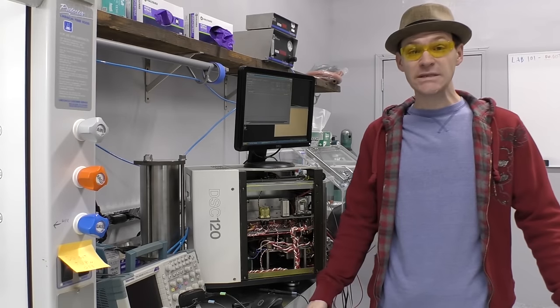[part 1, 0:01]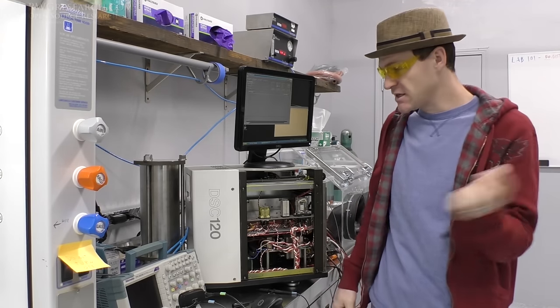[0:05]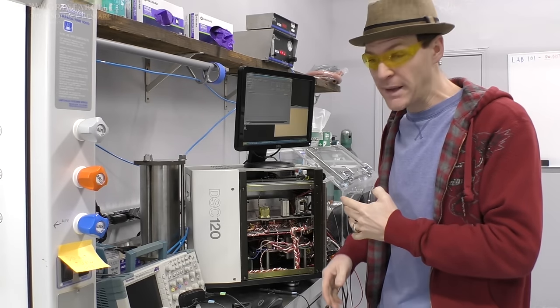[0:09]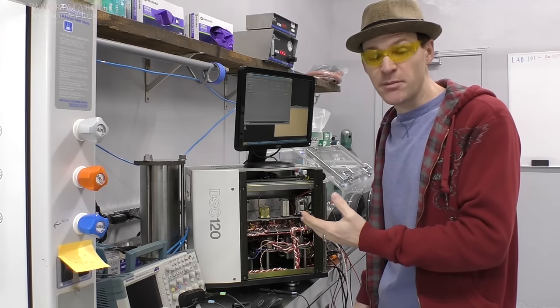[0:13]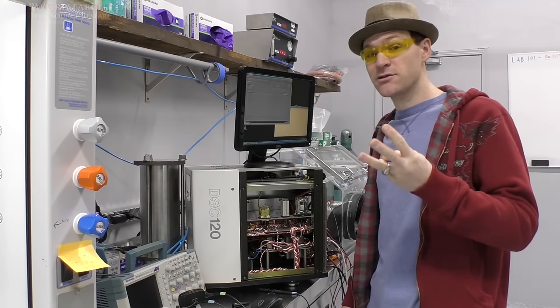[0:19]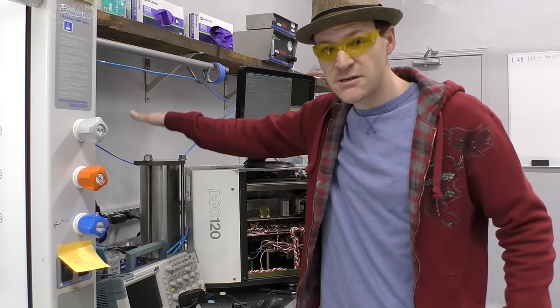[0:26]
So this video is about hacking the DSC, the differential scanning calorimeter. If you remember a little while back, we started working on this, we disassembled it, and I started building a pressure cell. So this video is actually going to be about building this pressure cell. I think there's three of these videos coming up. They're pretty interesting. They're just fun, and me building this pressure cell.
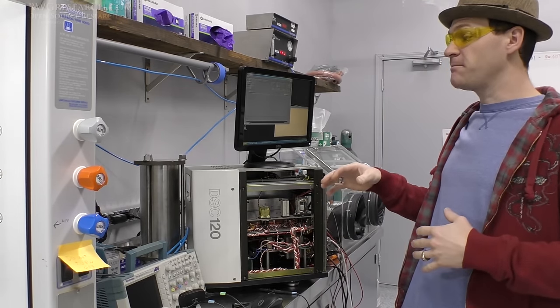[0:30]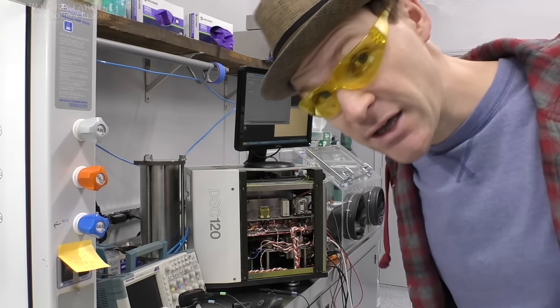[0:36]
Now, when we get to the end of those videos, in several weeks or more, I'm going to be showing you what I'm doing here right now. And so we'll get back to that real soon. Enjoy.
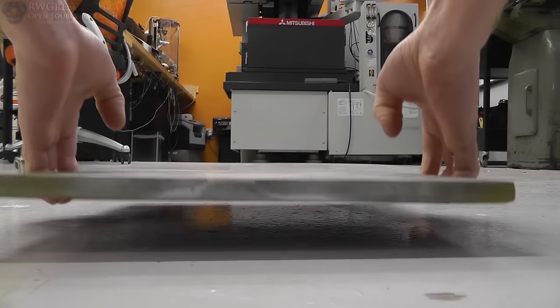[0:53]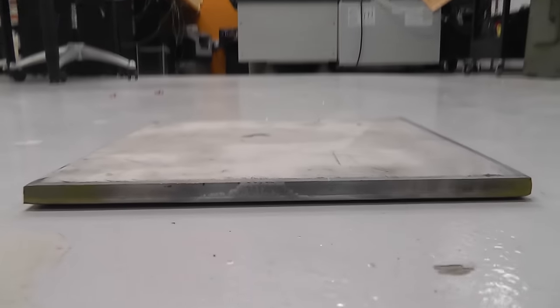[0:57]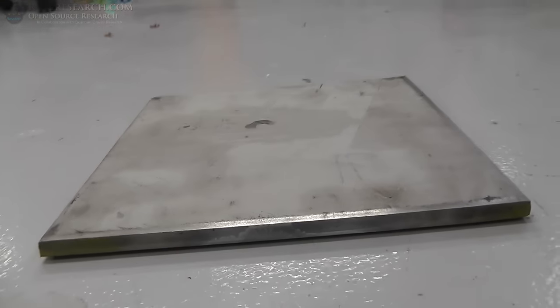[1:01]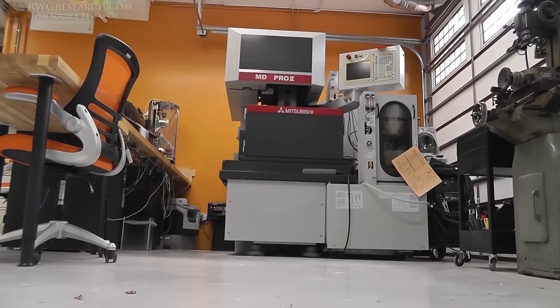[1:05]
So today we are working on the pressure cell for the DSC. And it all starts right here. This, my friends, is a half-inch stainless steel plate. We're gonna cut it, machine it, and do some other stuff, starting with the EDM. So let's get started.
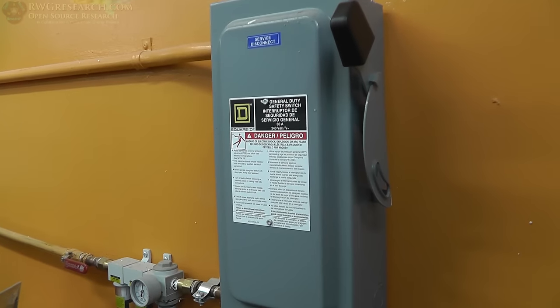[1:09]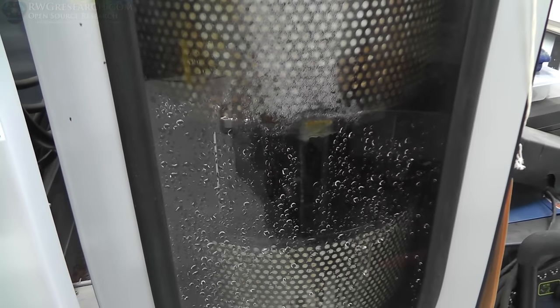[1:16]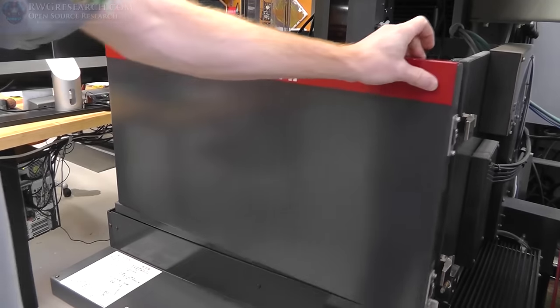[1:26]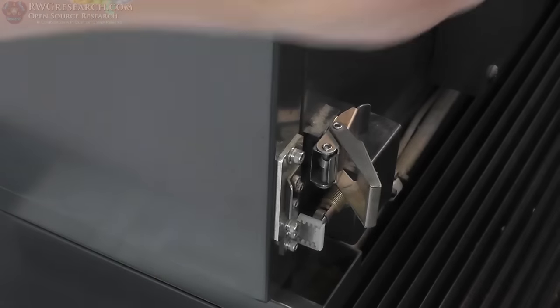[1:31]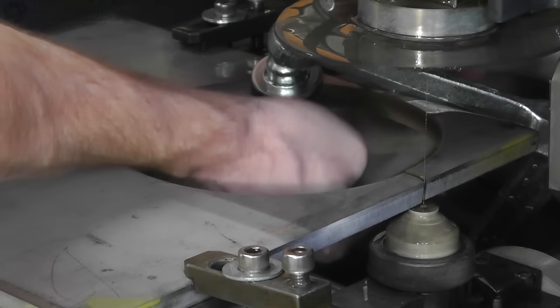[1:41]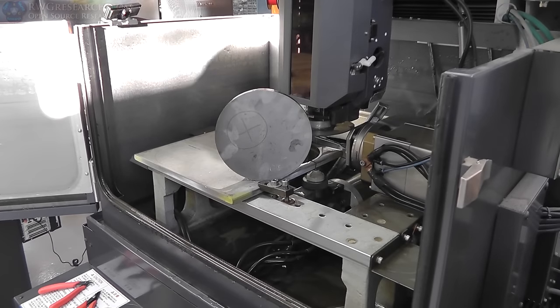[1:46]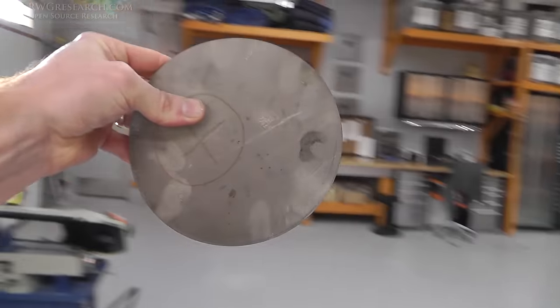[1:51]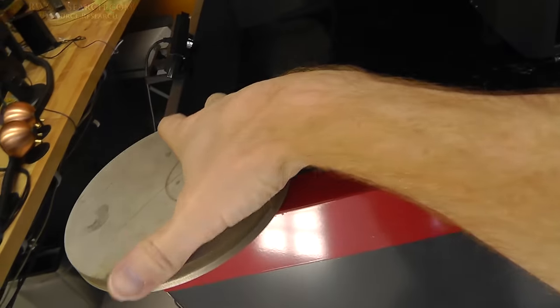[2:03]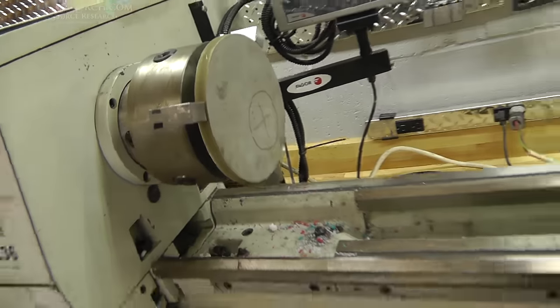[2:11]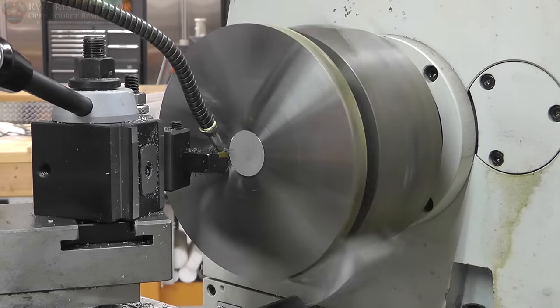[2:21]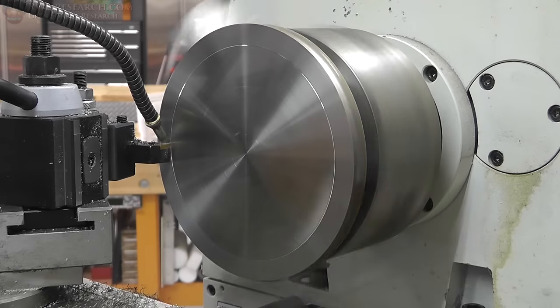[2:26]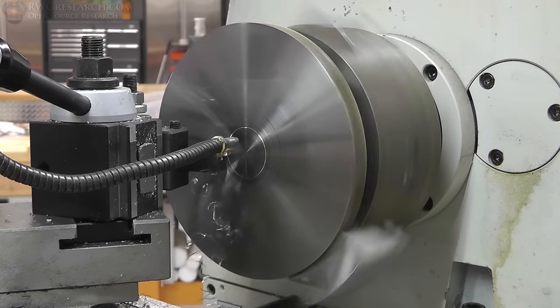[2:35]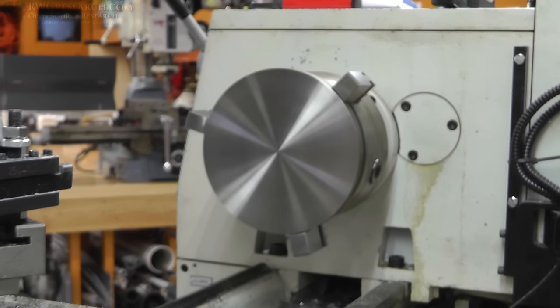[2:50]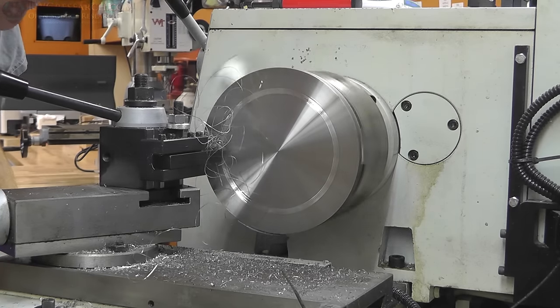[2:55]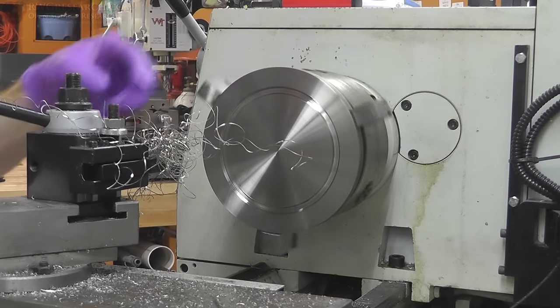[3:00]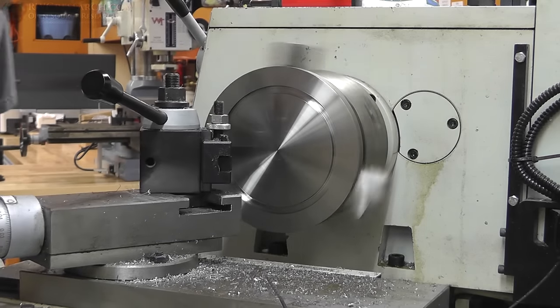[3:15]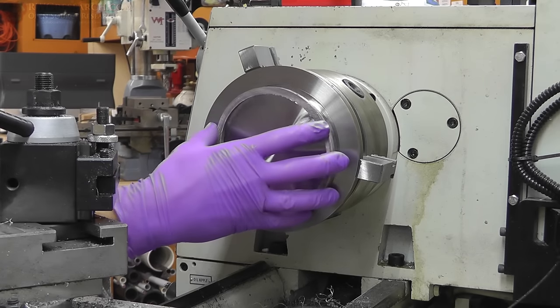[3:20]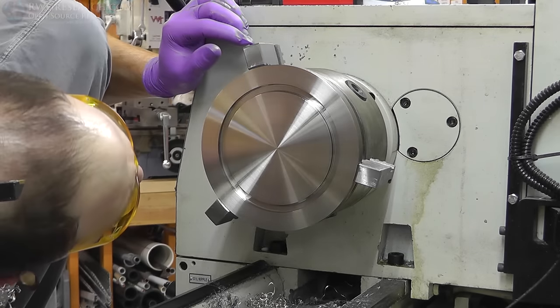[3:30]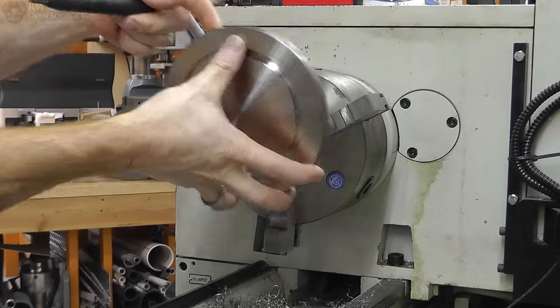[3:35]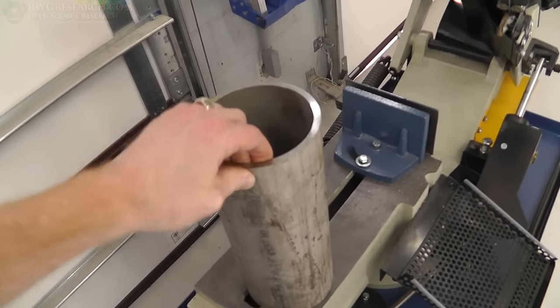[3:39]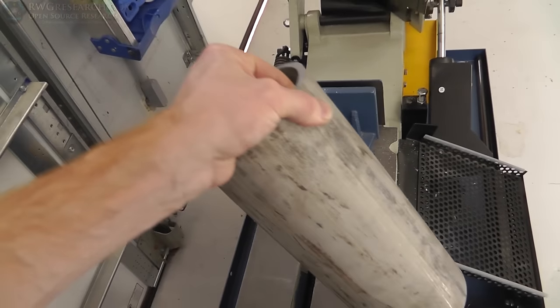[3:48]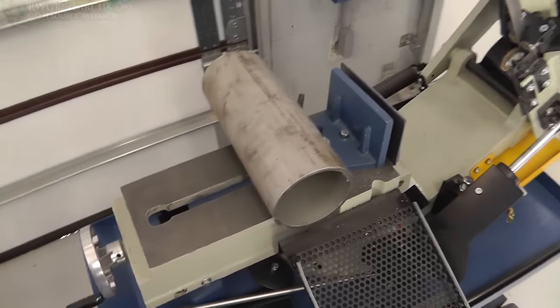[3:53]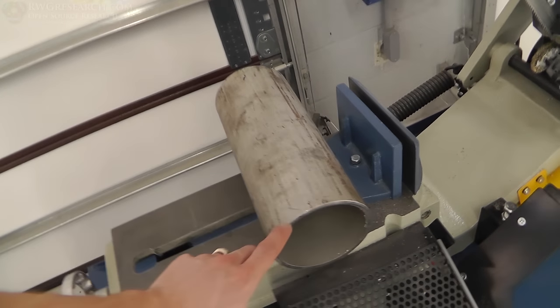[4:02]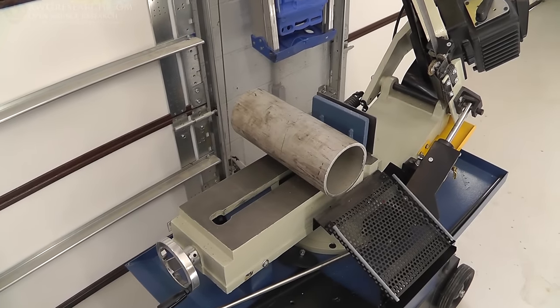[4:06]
Alrighty then, we got our outside chamber. This is 1/4 inch, 5 inch outside diameter, 4.5 inch inside diameter. It is just over 1 foot long. It's pretty heavy, stainless steel. And we need to square up the ends and we need to make it polished on the outside. We probably need to work on polishing the inside a little bit more. It's not a very good finish. So that's going to be our outside chamber. Let's do it.
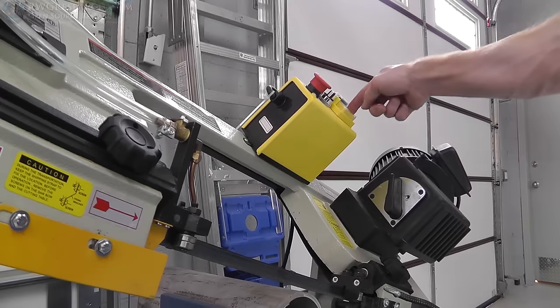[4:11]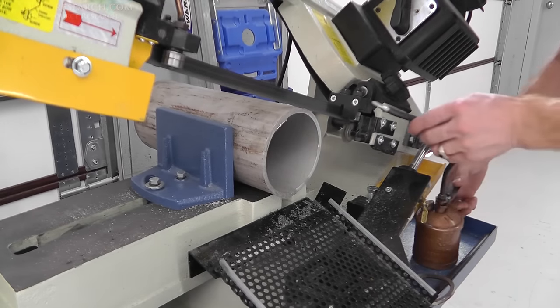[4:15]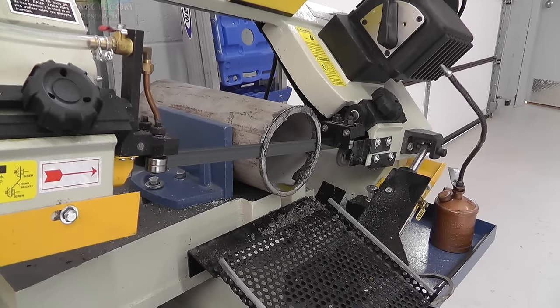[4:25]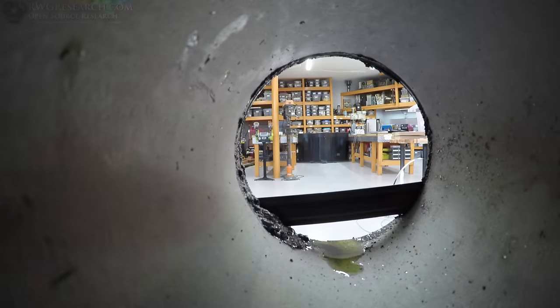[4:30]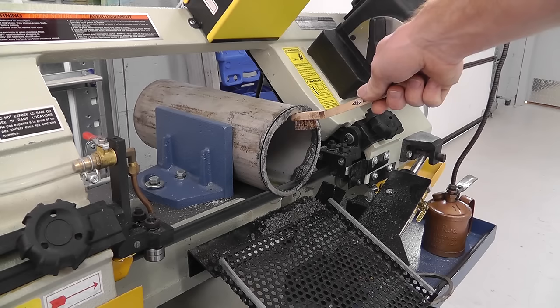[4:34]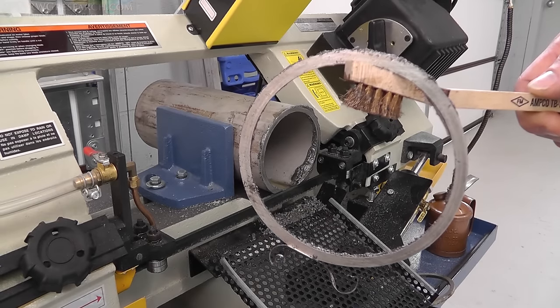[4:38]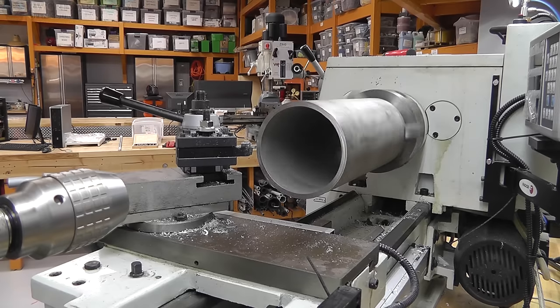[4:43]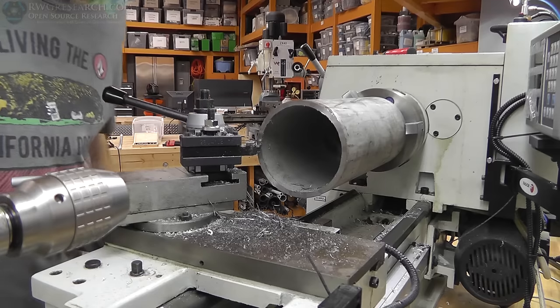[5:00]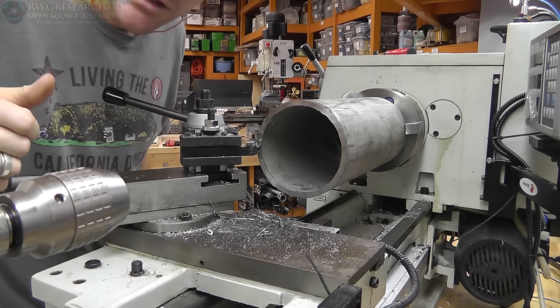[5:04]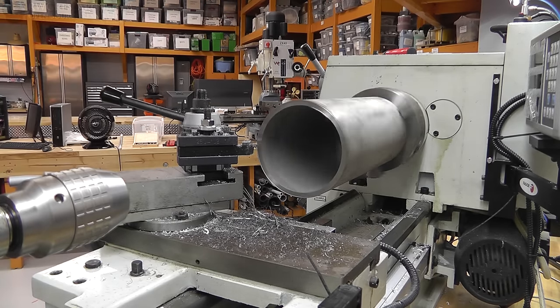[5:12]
Alright, so the reason that I had to pre-cut this on the bandsaw was due to the fact that the factory cut was so off. And this is going to take a while, so I'm just squaring up the ends here. It's singing.
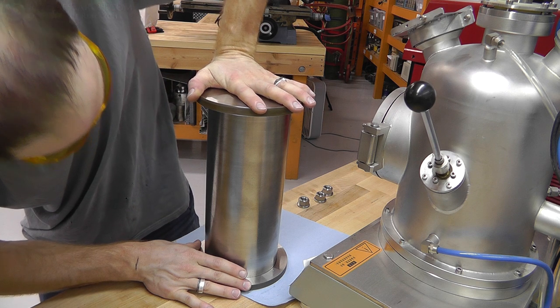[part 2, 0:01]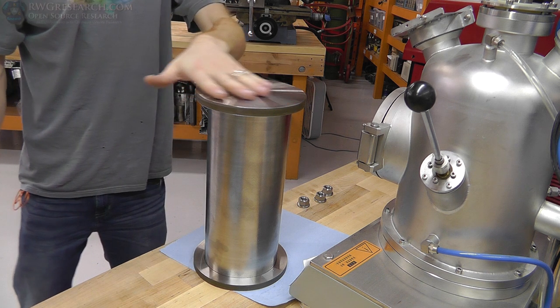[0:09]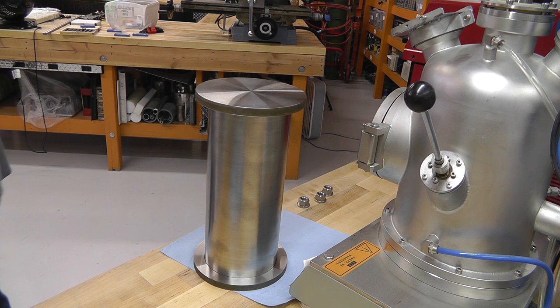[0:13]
Building the pressure cell. This is where we left off. Now on to the next phase. So, it's not edited as well as I'd like, but hey, it's a short one.
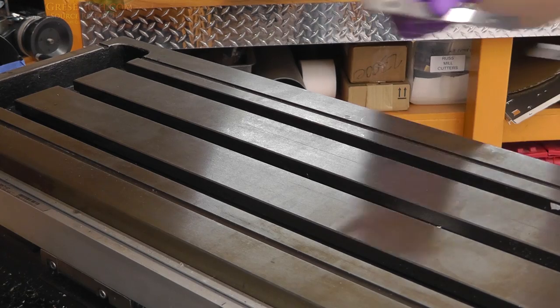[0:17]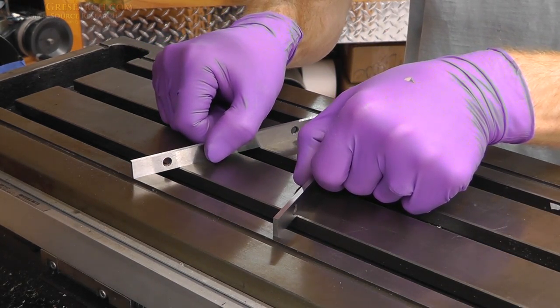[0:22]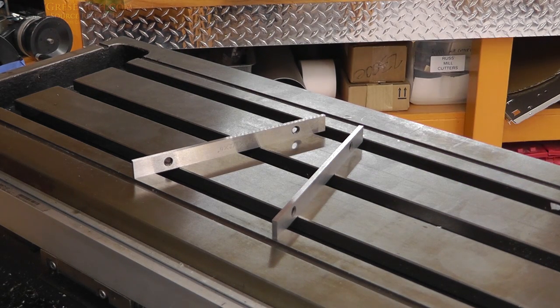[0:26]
I just kind of filmed the whole thing and take pieces of it.
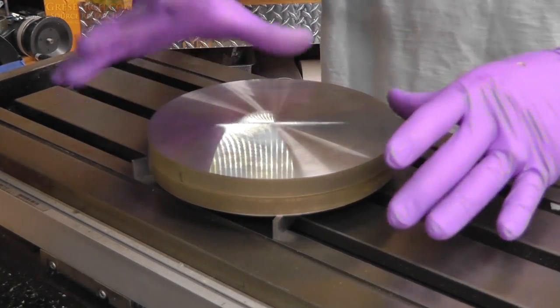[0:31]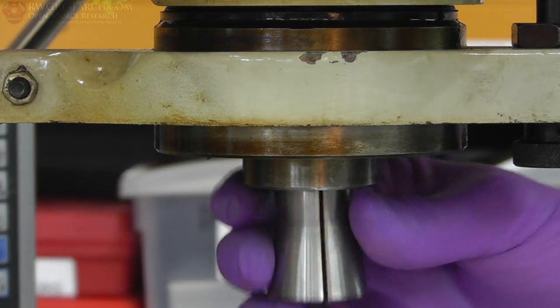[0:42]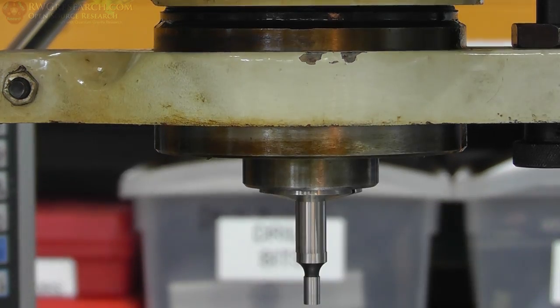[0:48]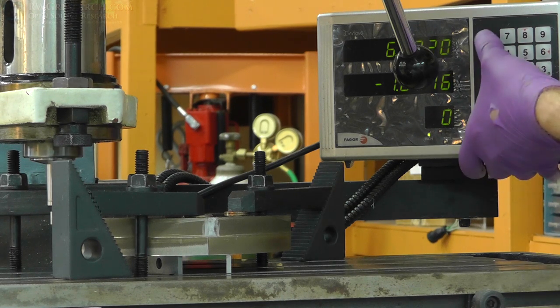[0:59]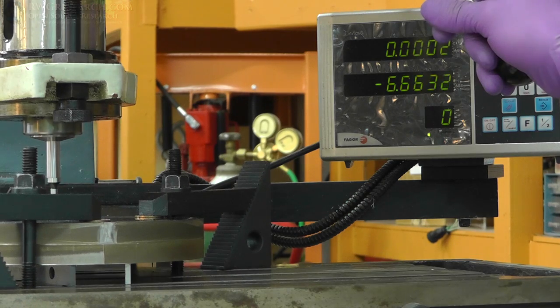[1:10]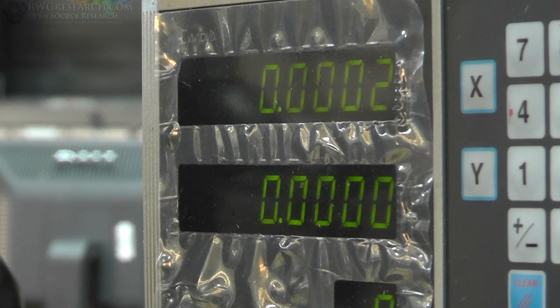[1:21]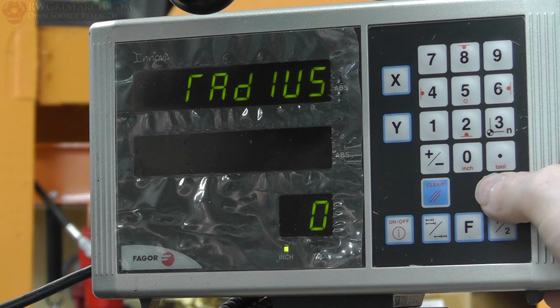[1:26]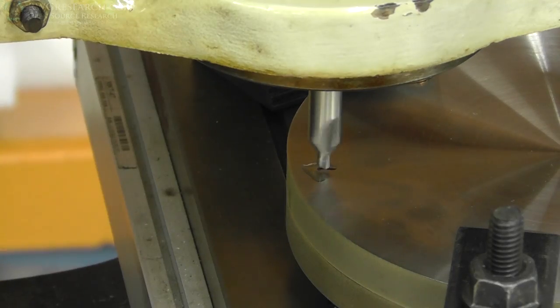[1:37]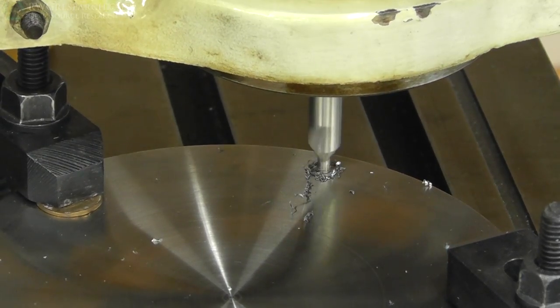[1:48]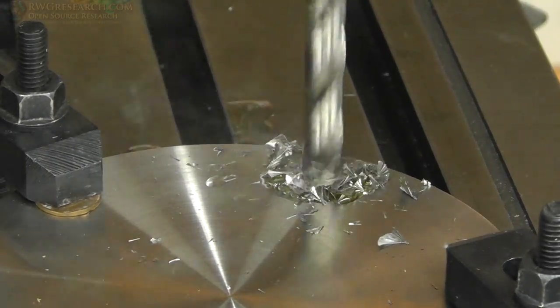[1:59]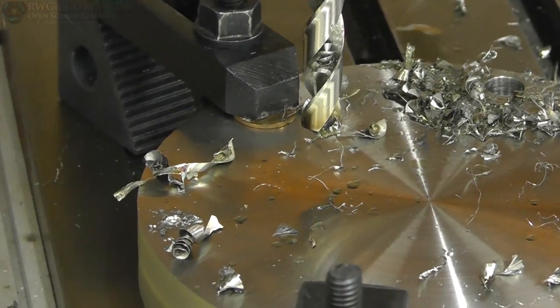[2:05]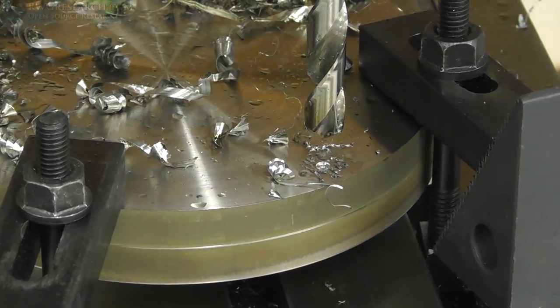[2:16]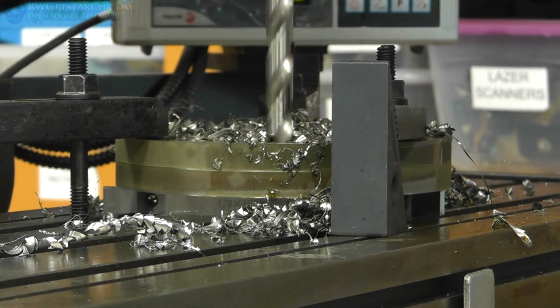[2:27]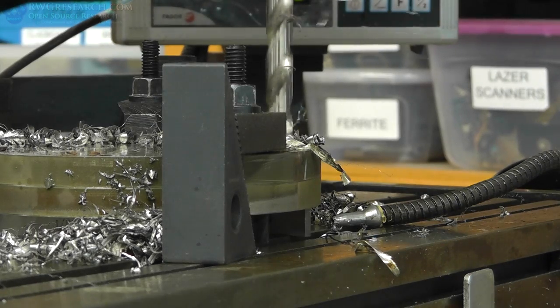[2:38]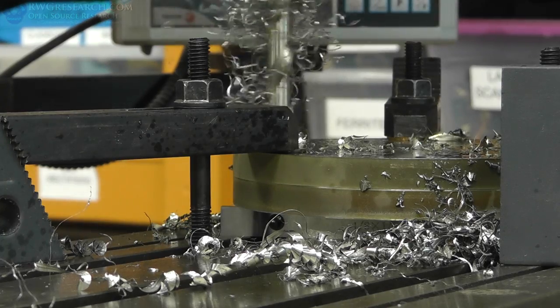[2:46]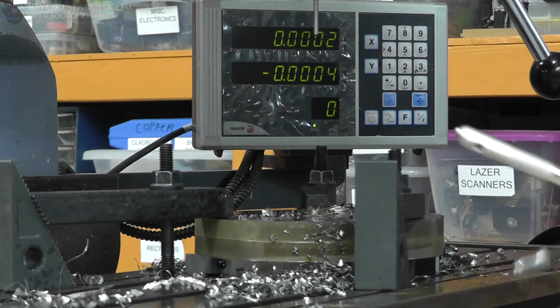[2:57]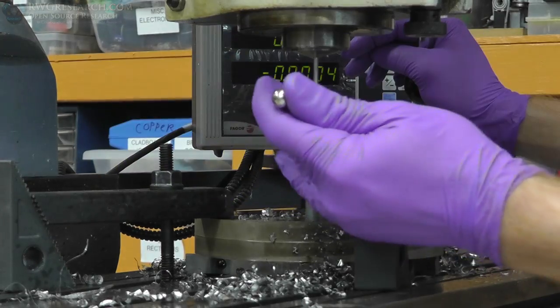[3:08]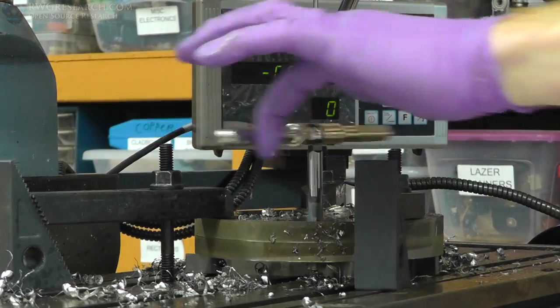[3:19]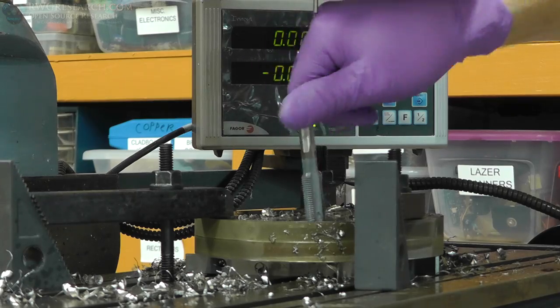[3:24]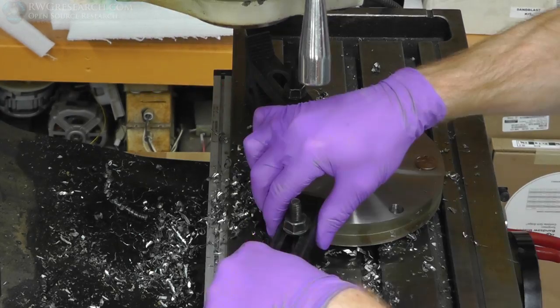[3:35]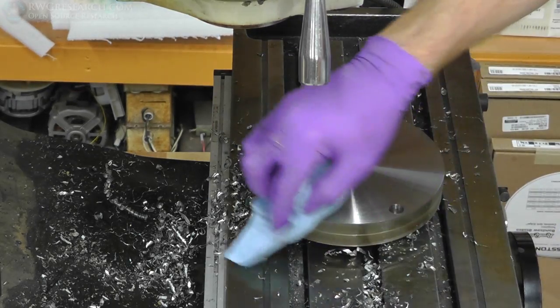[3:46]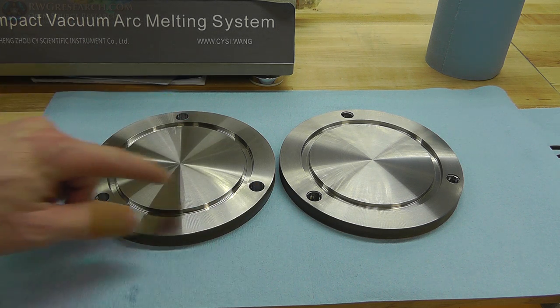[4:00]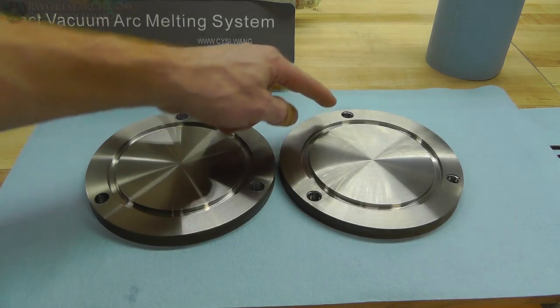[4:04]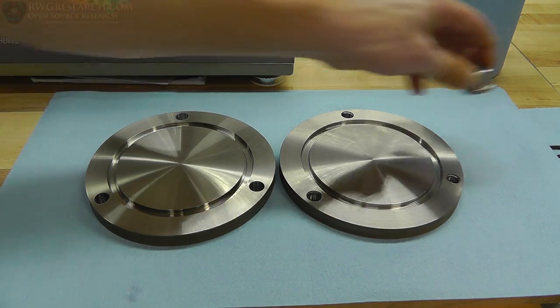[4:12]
Alright, so let me briefly explain what I did. I went ahead and drilled all these at the same time, and then re-drilled these with a bigger hole while it was all still set up, and then threaded the bottom plate. So the bottom plate is threaded, the top plate has holes in it, and the top plate is going to get flange nuts. So yeah, a little bit of deburring, but I am very pleased with that so far.
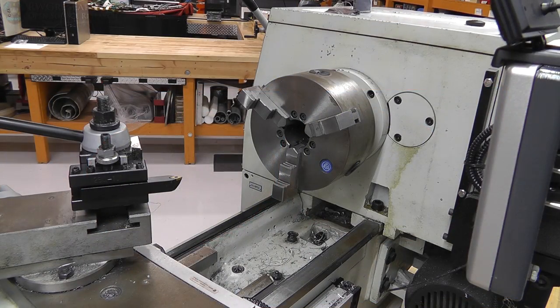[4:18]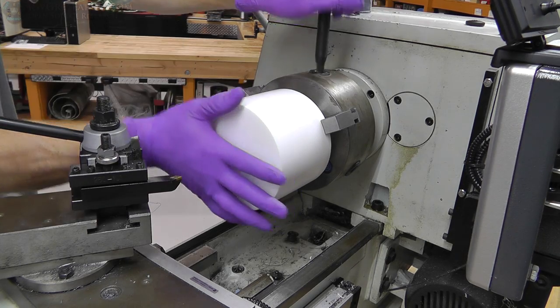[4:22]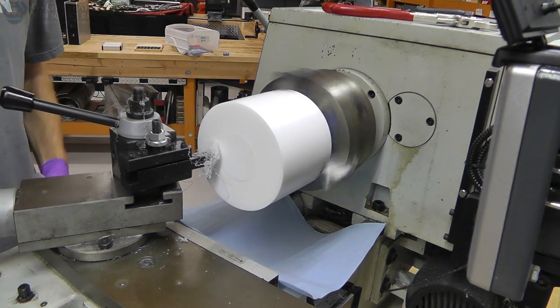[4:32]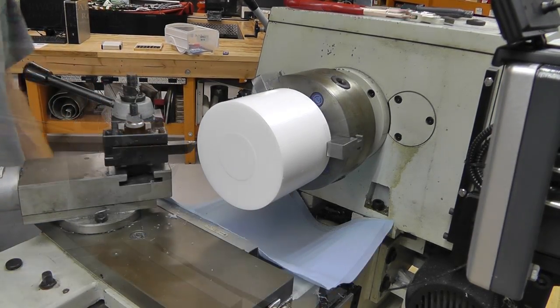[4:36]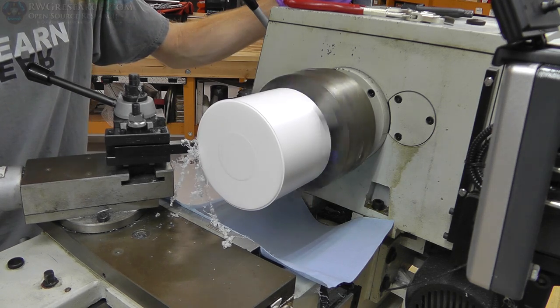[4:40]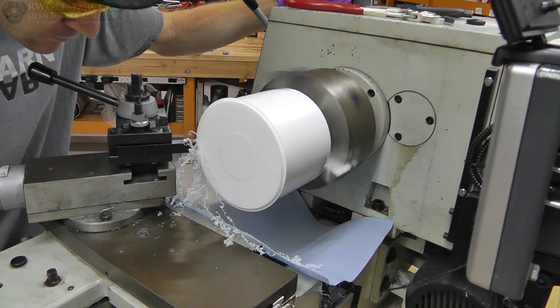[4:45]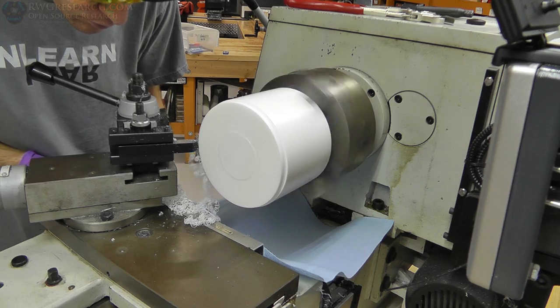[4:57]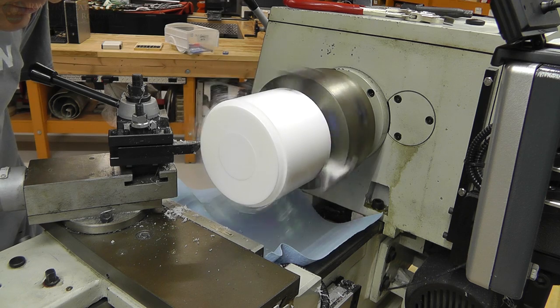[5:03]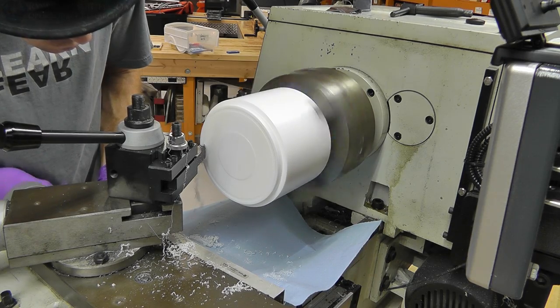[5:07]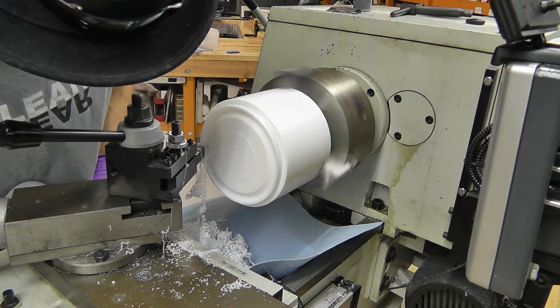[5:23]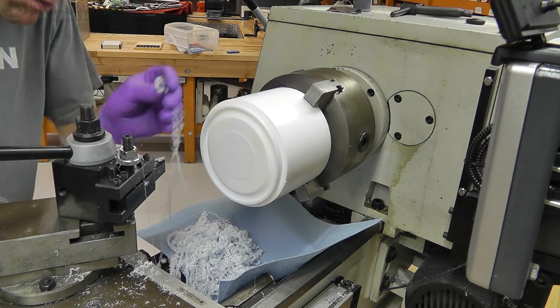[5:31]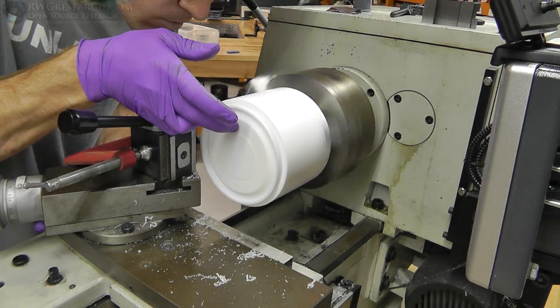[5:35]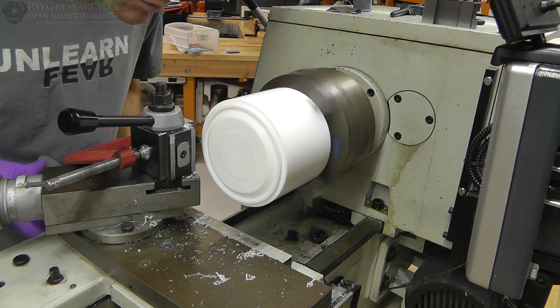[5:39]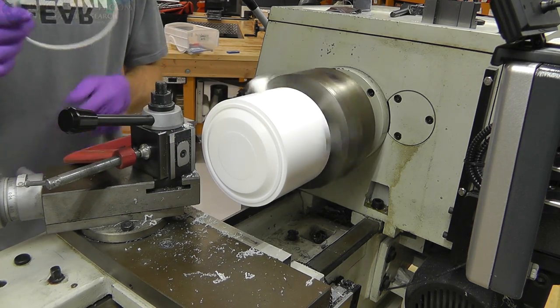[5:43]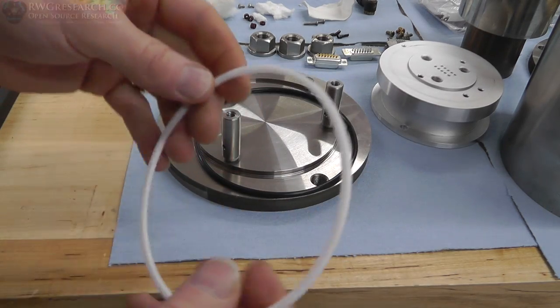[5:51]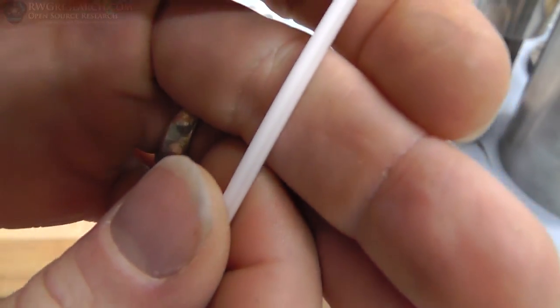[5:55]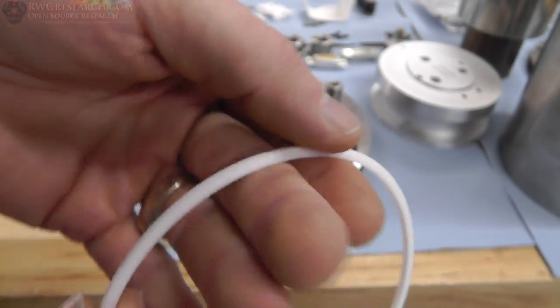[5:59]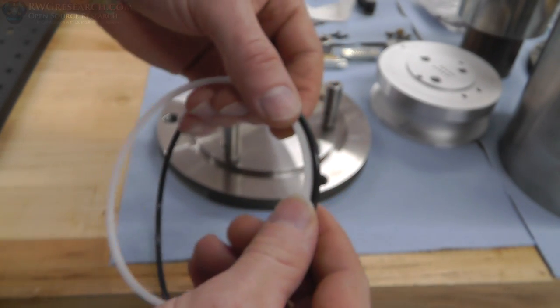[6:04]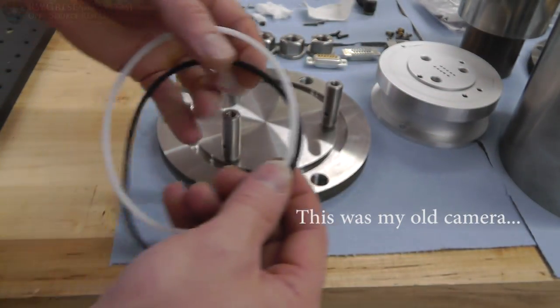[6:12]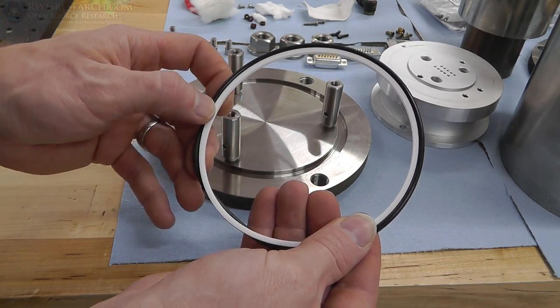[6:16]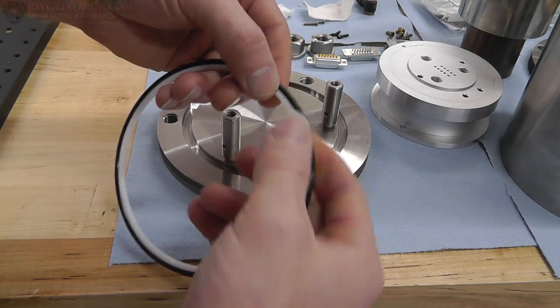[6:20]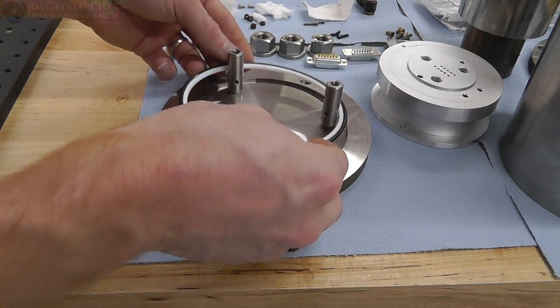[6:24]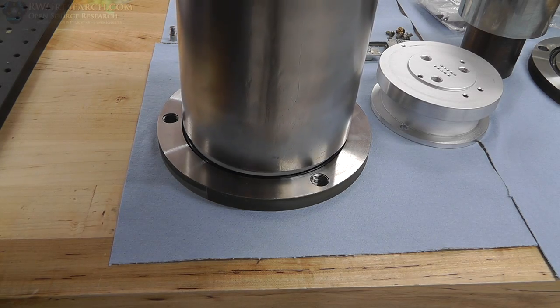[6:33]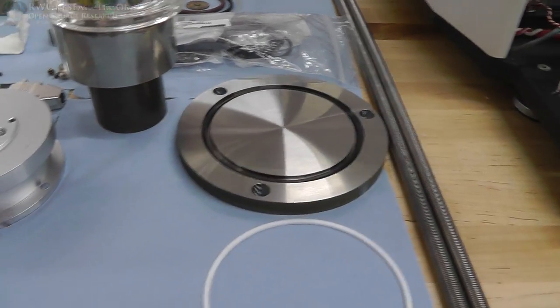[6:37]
Alrighty then, so let's have a look real quick. So I made this Teflon ring, and it is kind of hard to see, but it has a little groove in it. And what that's for is I want to take this O-ring, if the camera will focus. So I want to take this O-ring and put it on this Teflon ring, and then put that inside there to hold my ring in the right place. And then when I put this on, I know the ring is exactly in the right spot. Same thing with the other one.
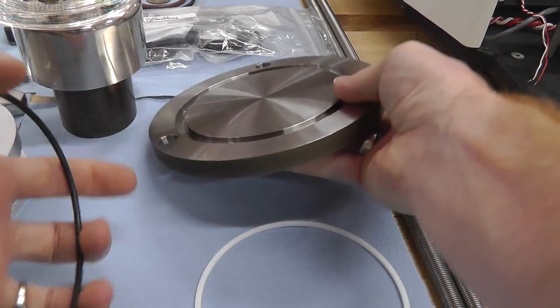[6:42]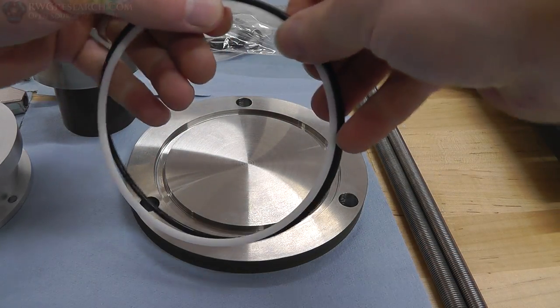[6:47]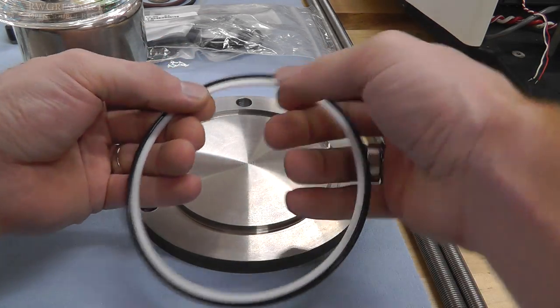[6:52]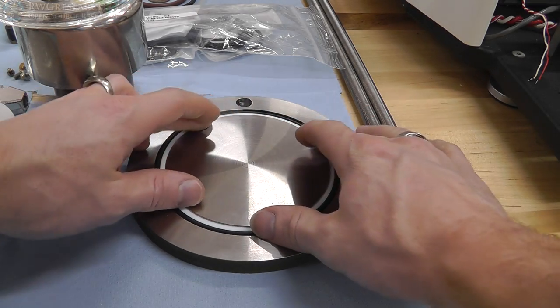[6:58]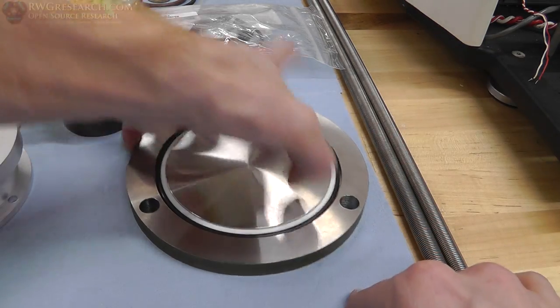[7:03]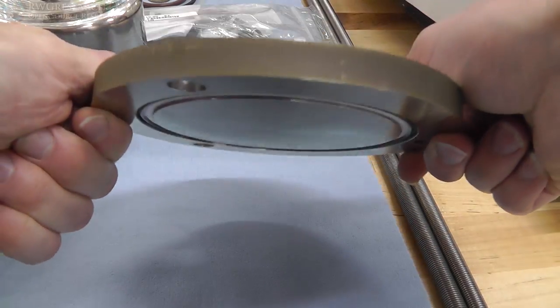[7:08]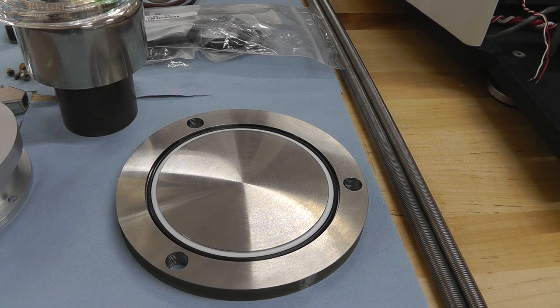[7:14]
Now, they do make Teflon rings. Teflon is inside of the rubber. However, probably a lot more expensive, so yeah. This does the job really well. Now this one fits tight, and it is the lid, so I do not want it to fall out every time I take the lid off. So now we have an O-ring holder. Simple as that. Think outside the box sometimes.
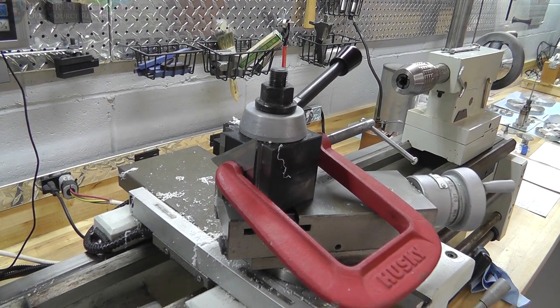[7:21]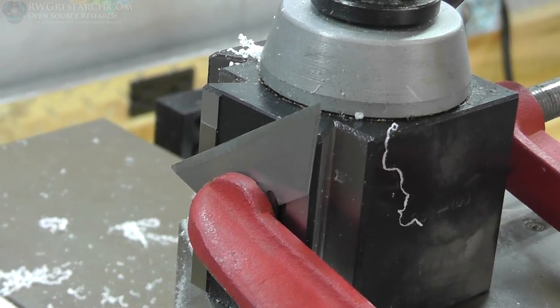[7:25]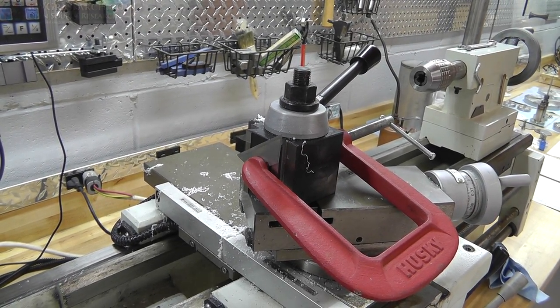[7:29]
Speaking of thinking outside the box, sometimes you just gotta get a little creative. Yes, that's a razor blade clamped onto my tool post, and it works like a charm.
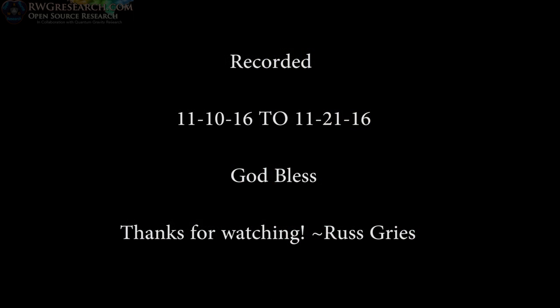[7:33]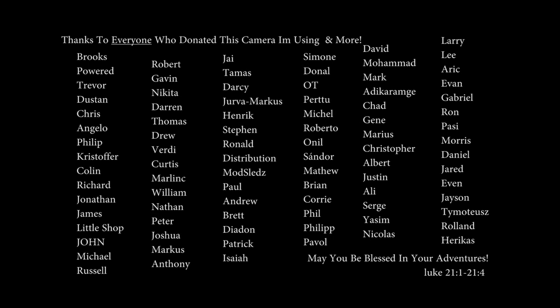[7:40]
Oh yeah, well, you know, short and sweet, but hopefully you enjoyed. I think the next one's gonna be even more fun. I like it. It's pretty well edited, so we'll see it soon.
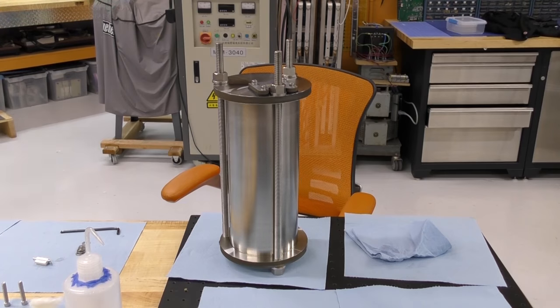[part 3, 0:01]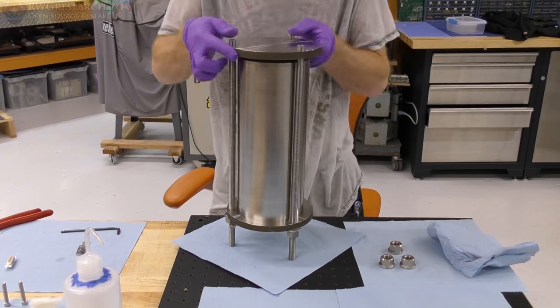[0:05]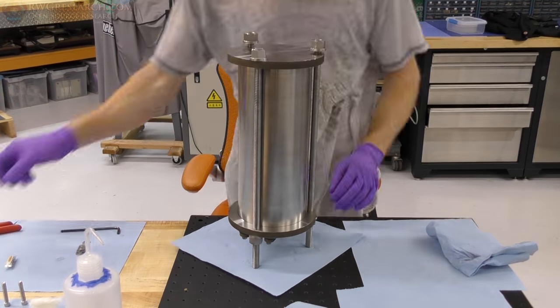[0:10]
It's been a week or two. I've been pretty sick, so I had to bail because I had to do this voiceover. So let's jump back into it and get back into the rhythm.
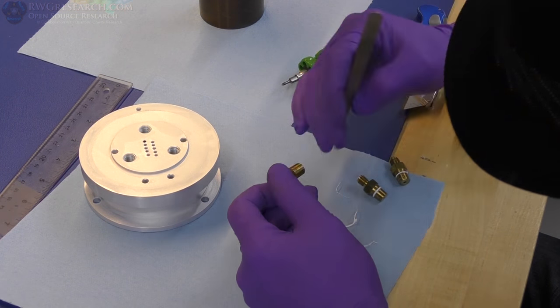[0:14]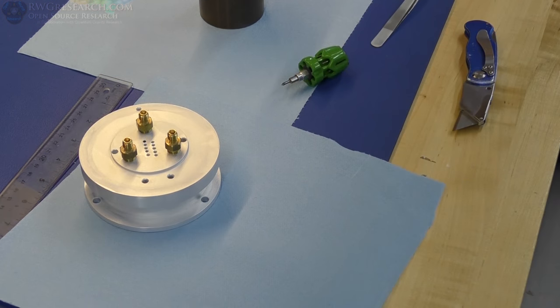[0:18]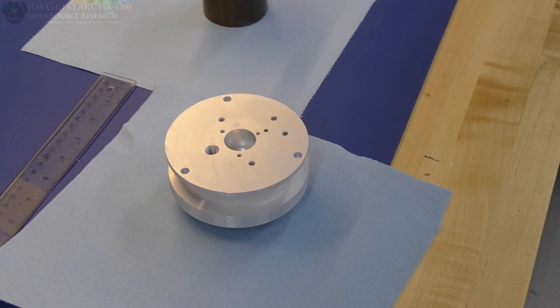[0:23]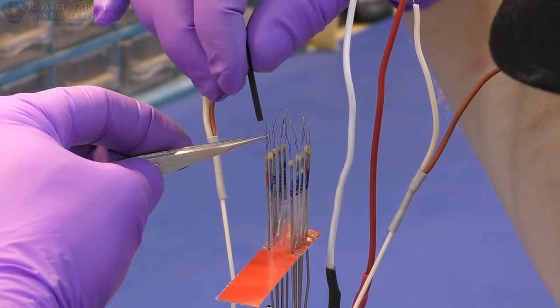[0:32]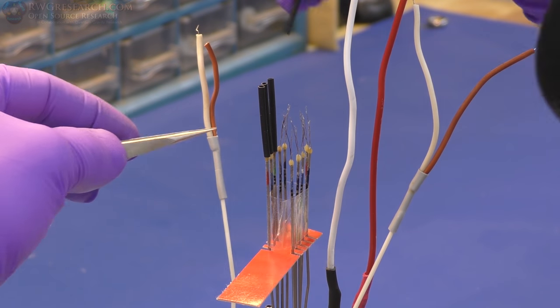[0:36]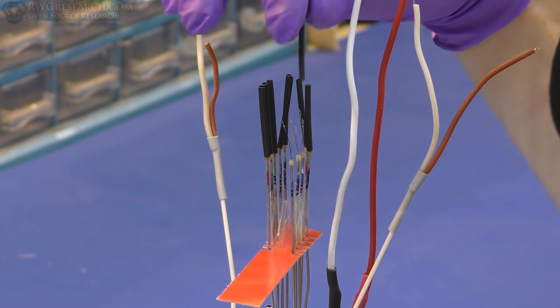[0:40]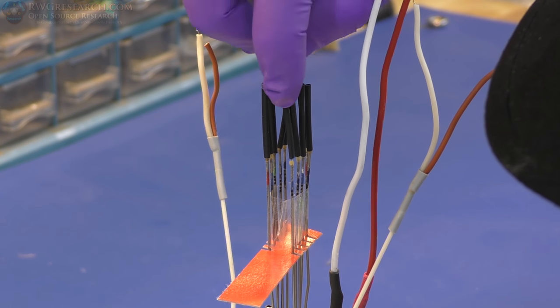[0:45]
So I got a little bit of chit-chat here, so I got some time to talk while you watch this time lapse. So right now I'm installing the little brass connectors that connect the bottom to the top. Now here, we have a whole bunch of little thermocouple wires. If you ever seen surgery on electrical systems, this would be the one to watch. If you've never seen it, this is your first. This is my first. So I'm putting these little heat shrink tubes on here
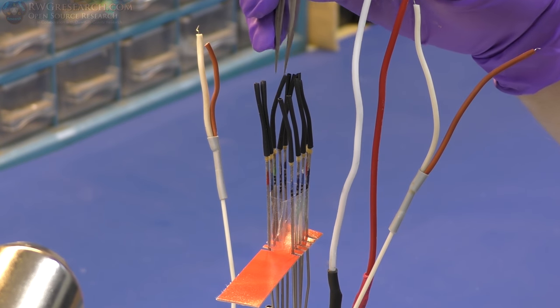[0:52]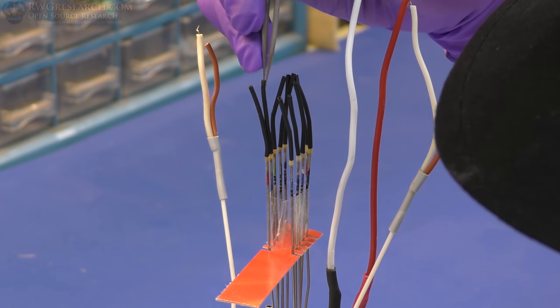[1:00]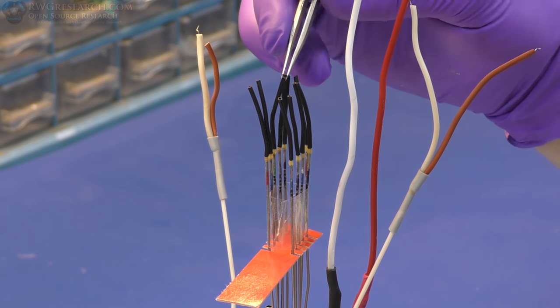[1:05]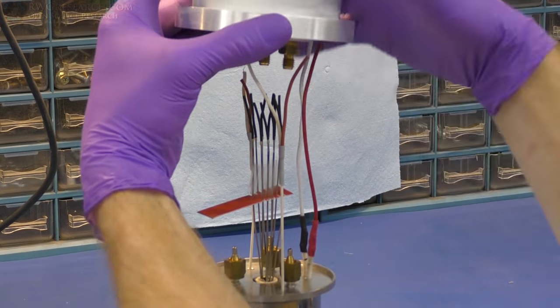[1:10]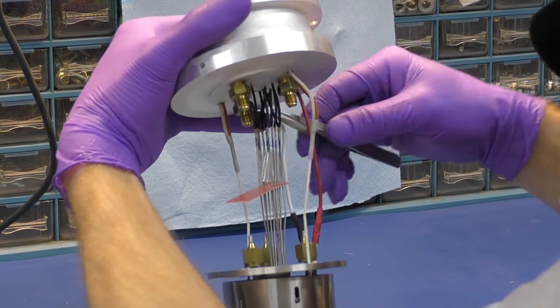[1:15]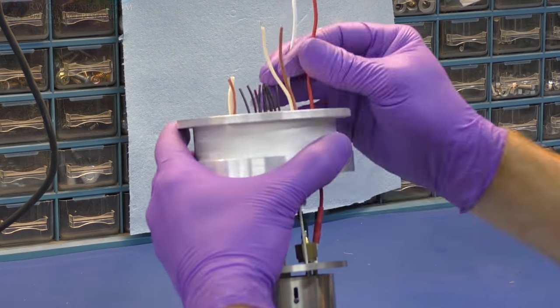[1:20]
because I have to pull all of these wires through the aluminum block that have individual holes for all these wires. It's a bit crazy, but this was the only way I could think of to really get them in there and not bend them off and break them. If any of these break, I basically don't have any way to fix them. They go down inside of the unit, the measuring apparatus. So here you can see I'm very carefully putting each one in there, and this actually worked very, very well. I was quite happy with that.
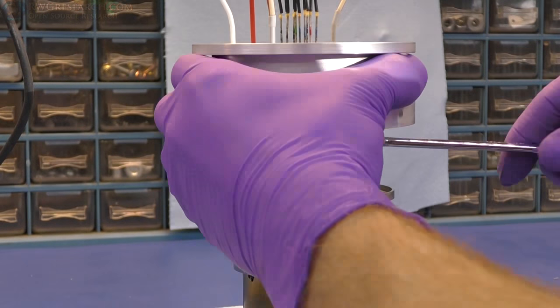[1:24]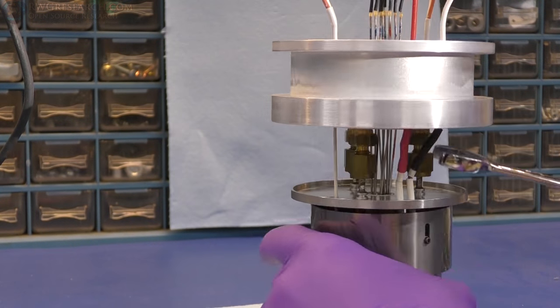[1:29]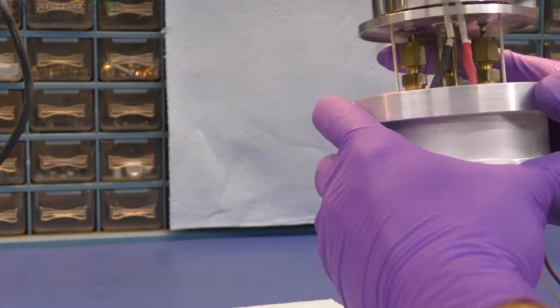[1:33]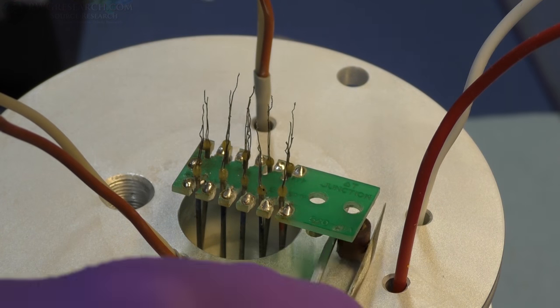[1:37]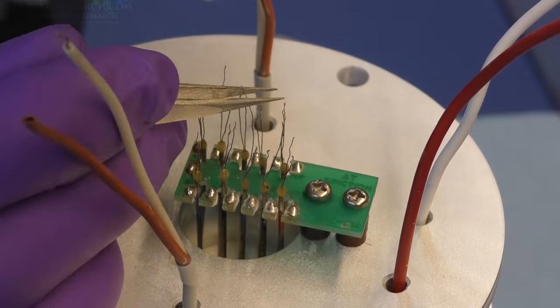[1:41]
So this is where those connectors, these are actually regular pipe connectors for just general use. So I just tightened them down and got everything set up. So now I'm putting the original circuit board back on here. And I'm going to start soldering these wires up the way they were originally. So the way they were originally, they were just twisted together and then soldered.
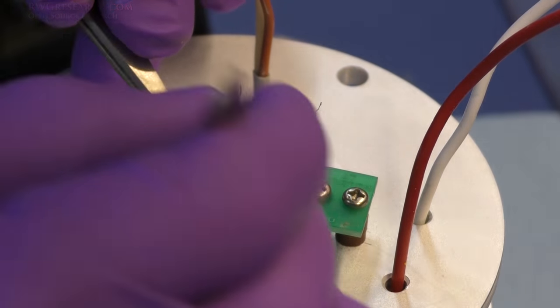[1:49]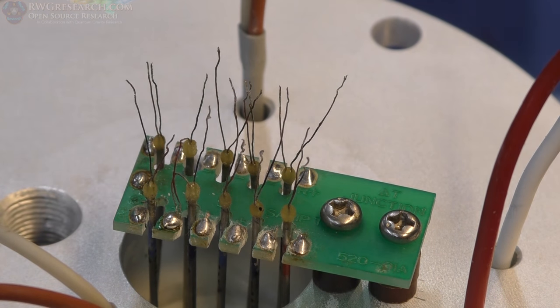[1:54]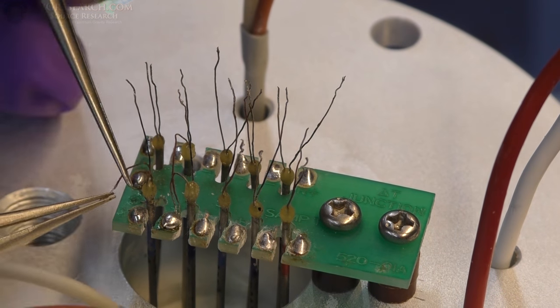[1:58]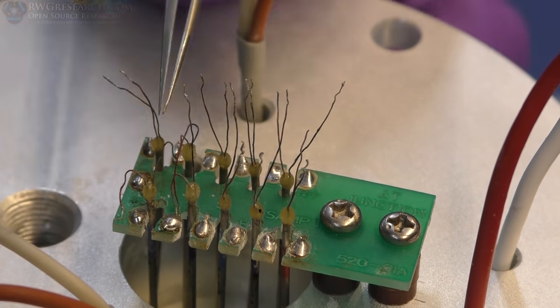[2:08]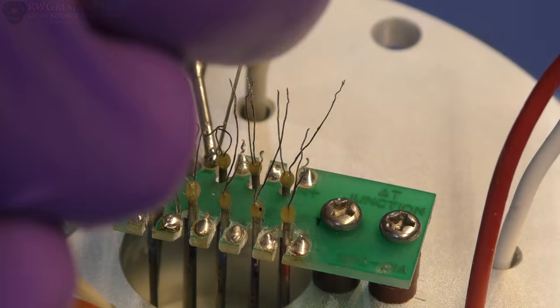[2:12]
Now I guess by twisting them together, you can sort of get rid of the cold junction. Most of you have no idea what a cold junction is. It's when you put two different types of wires together for thermocouples, or you have a junction that goes through a different material. So these are made out of a special material. And if you switch that up, they will have what they call a cold junction. And you have to compensate for that.
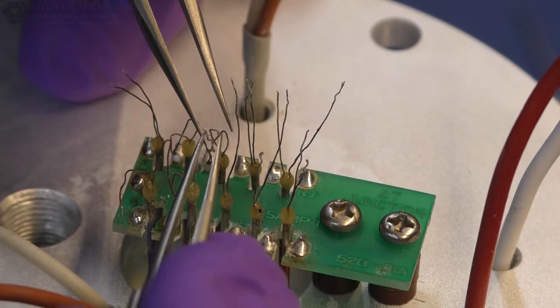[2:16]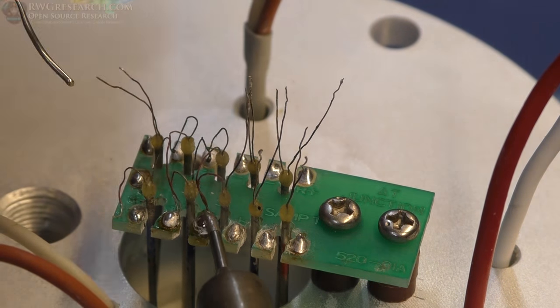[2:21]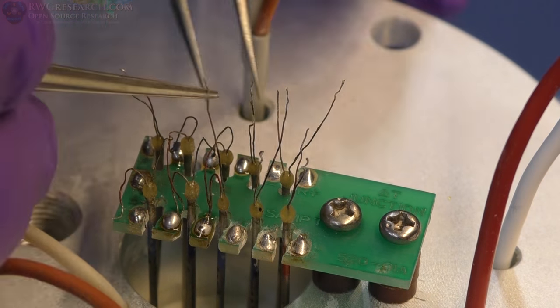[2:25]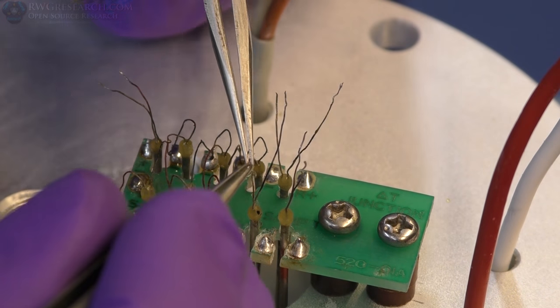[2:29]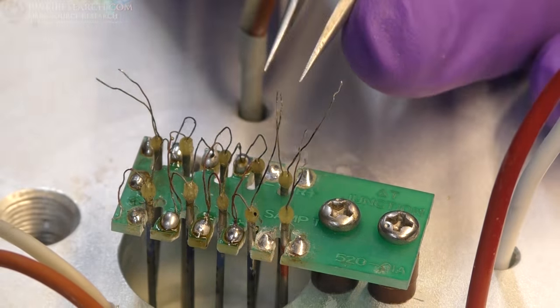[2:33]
So all the wires are thermocouple wires that go all the way back to the unit. But then on the unit itself, on the circuit board, they actually are just copper traces. So I'm not sure, the machine itself must be doing the compensation. That's something that I don't have access to or know. So I'm assuming it is.
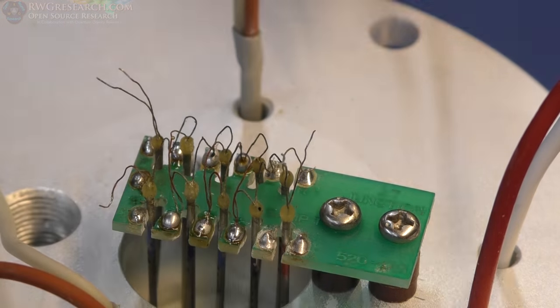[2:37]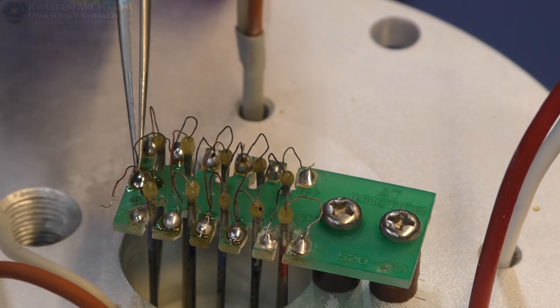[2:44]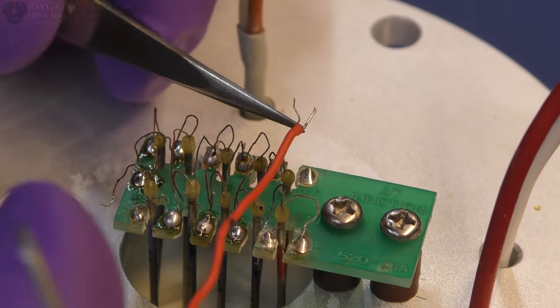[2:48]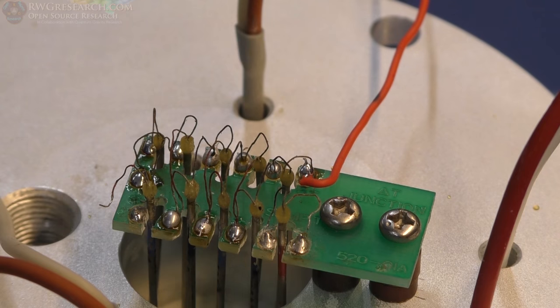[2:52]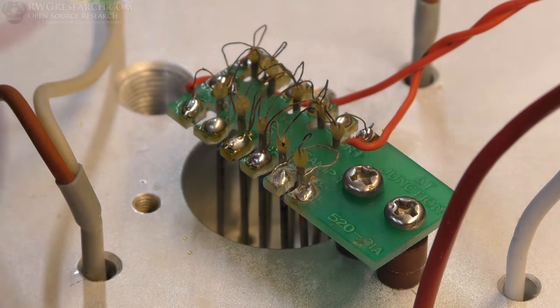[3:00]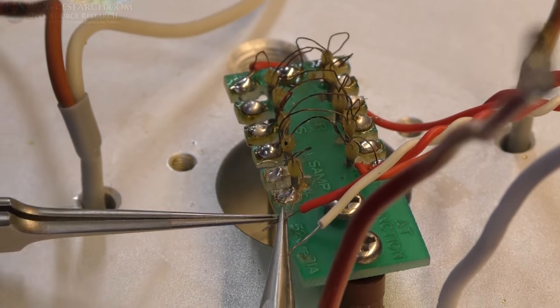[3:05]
But yeah, this was really, really tricky getting all these wires on here, as you can see. If I bend any of them the wrong way, they break off. And if they break off, well, the whole thing is basically shot, because you have to replace the whole sensor. And this machine is actually about 25 years old, so it's a bit tricky to get a hold of anything for it. So I guess the solder just holds everything in place, and then that takes care of most of the cold junction by wrapping the wire around there.
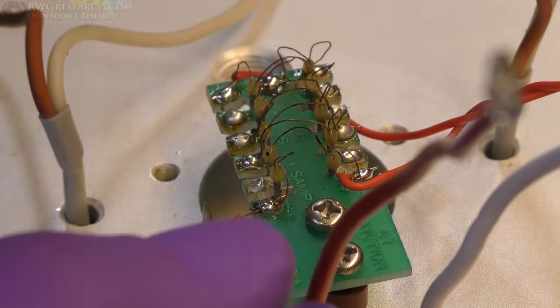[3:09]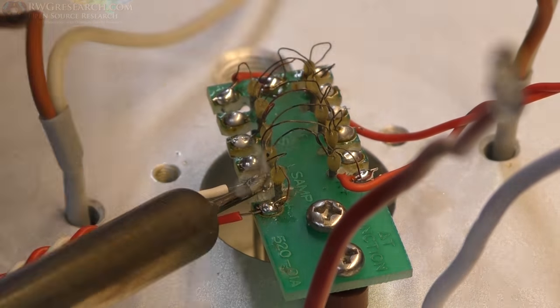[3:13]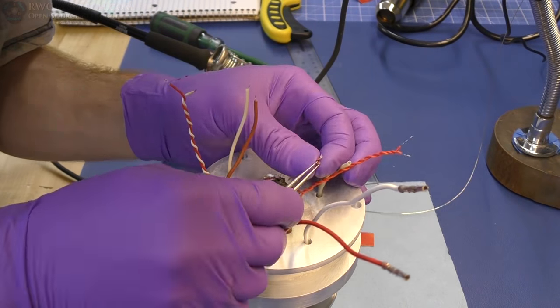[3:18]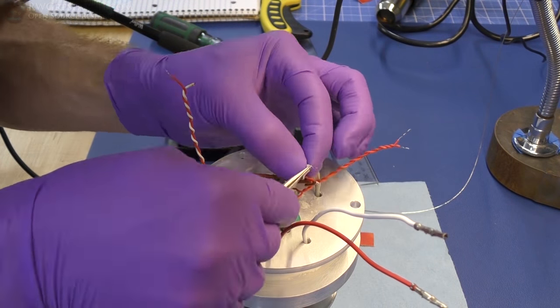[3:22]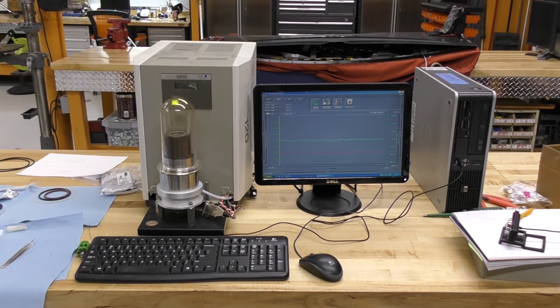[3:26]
This is not silver solder or anything special. This is low temperature standard solder. If they used a custom special solder, then I don't know about it, but it seems to be the calibrations all check out. So yeah, one little piece at a time, my friends. That is electrical surgery.
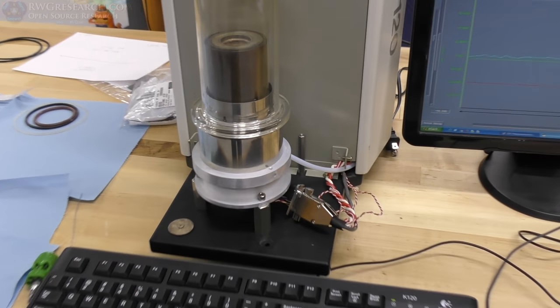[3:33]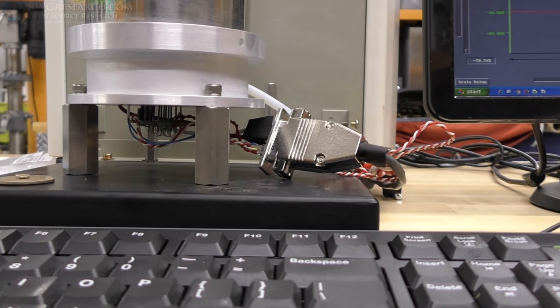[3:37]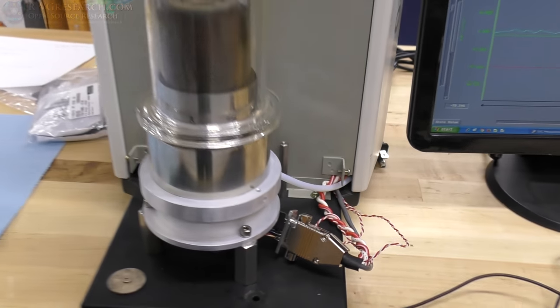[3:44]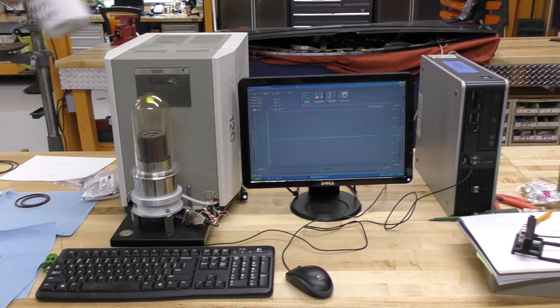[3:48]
Alright, so here we are. We are testing this thing. So I put the base back on it, wired it all up, and what I want to do is just make sure it's at least operating correctly with this new plug, because it originally didn't have a plug on it, so there could potentially be all sorts of problems. Cold junctions and all sorts of things to be worried about. So I've got a piece of indium in there, as you can see right here. So this piece of indium
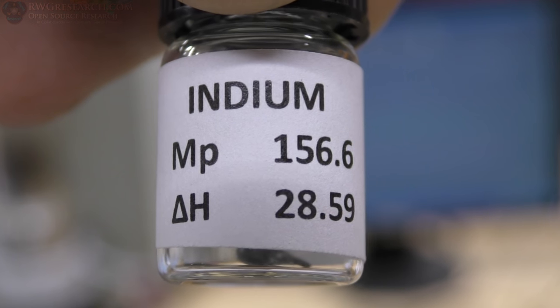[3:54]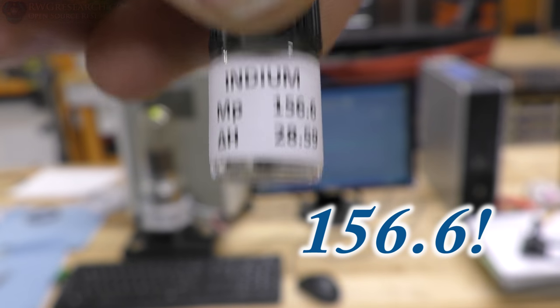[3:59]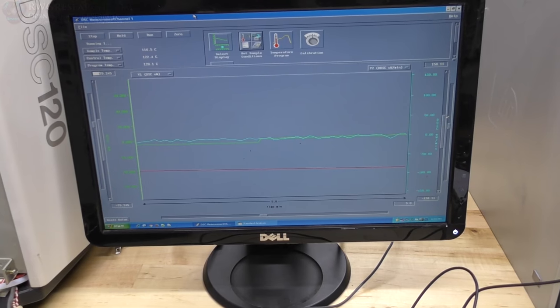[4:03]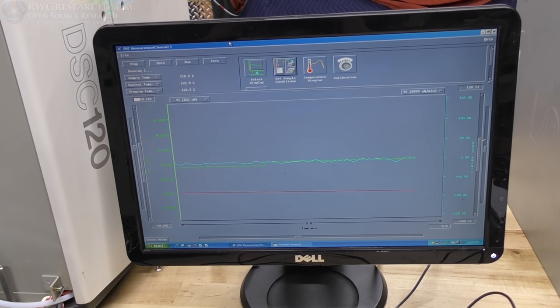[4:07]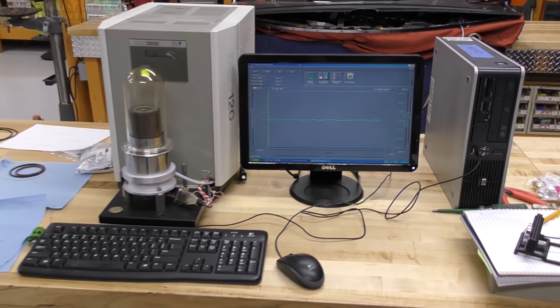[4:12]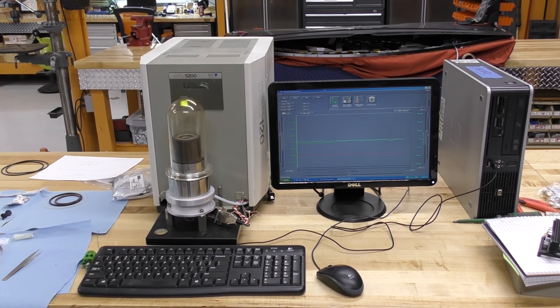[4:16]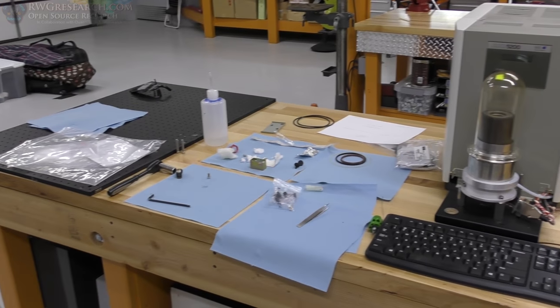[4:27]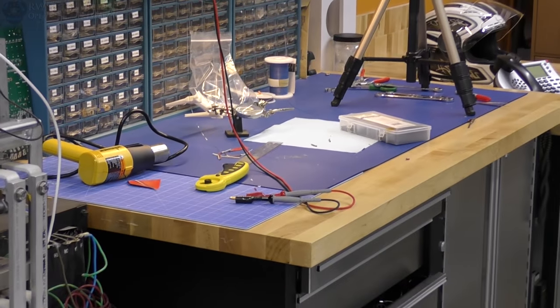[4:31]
Managed to make a pretty good mess, though. My entire bench over here is pretty messy, too. But you know what? It's part of getting stuff done.
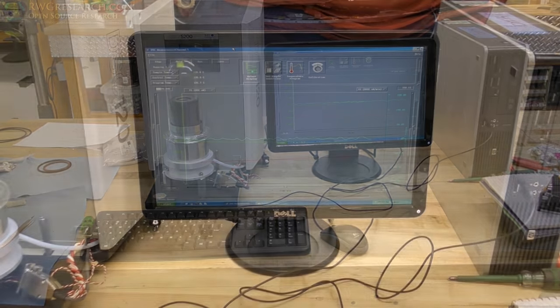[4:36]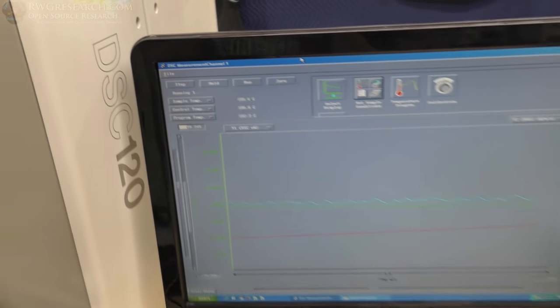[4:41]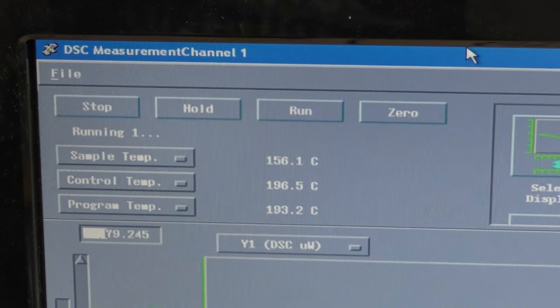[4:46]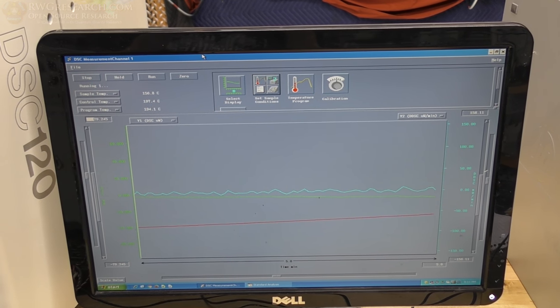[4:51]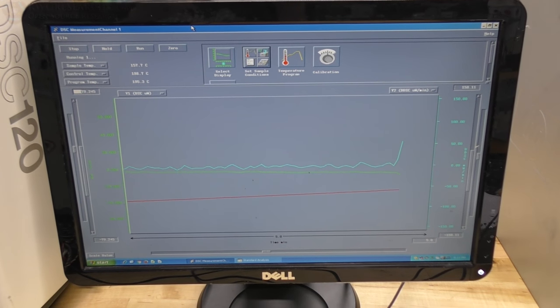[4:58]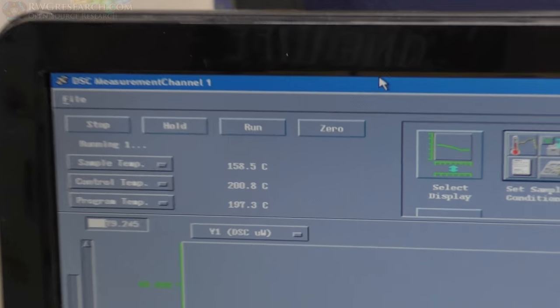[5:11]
Alright, so here we go. It should be peaking out. It is right close to our transition temperature, the top one there, the sample temp, and it should change here. There it goes, right on the money. So it's still working really well, or it supposedly is working really well. I got a lot more checks to make, but at least we know that the transition temperature is reading correctly.
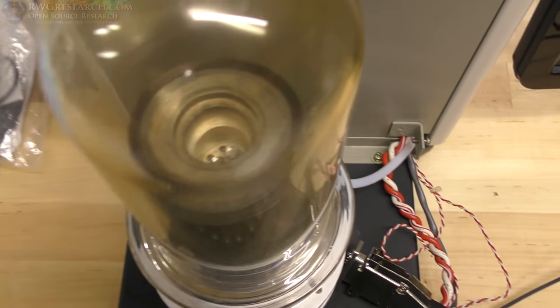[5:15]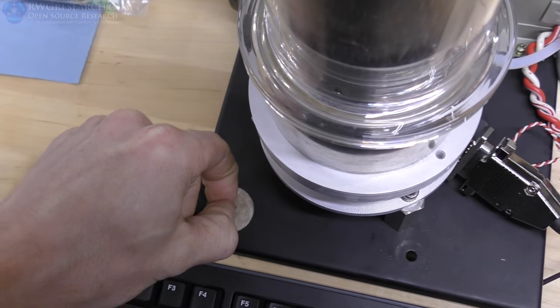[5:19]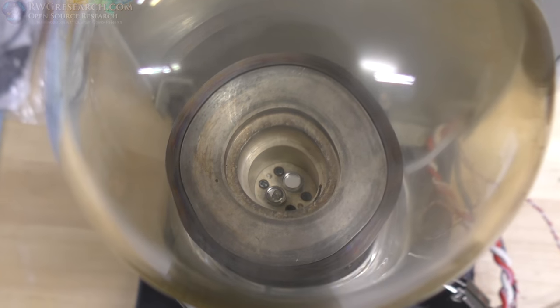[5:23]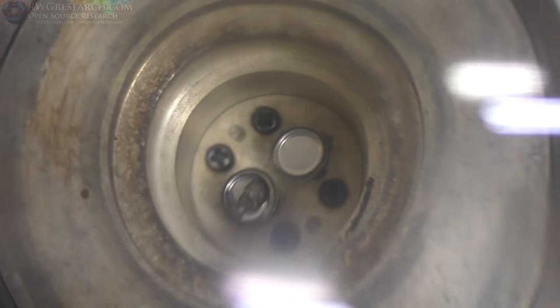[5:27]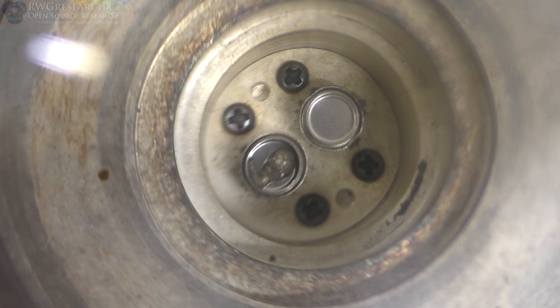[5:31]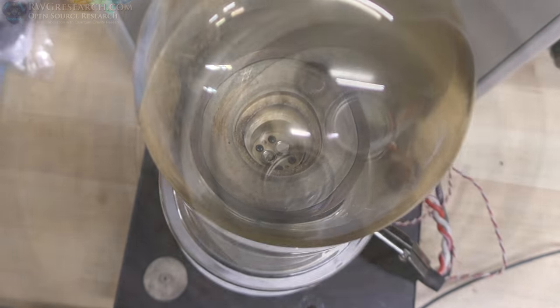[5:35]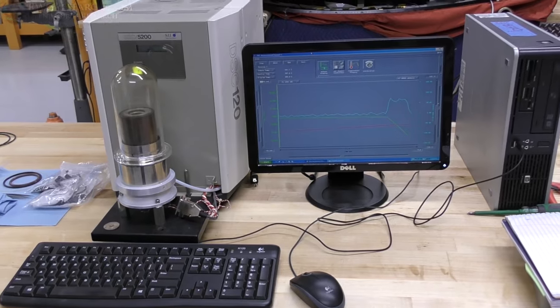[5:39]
And it's kind of funny, I took the lid off. It usually has this lid that sits on top of me here. I took it off trying to see the sample, and you know, the sample isn't actually melting. But it can measure that it had a phase change. It picked that up. It's pretty wild.
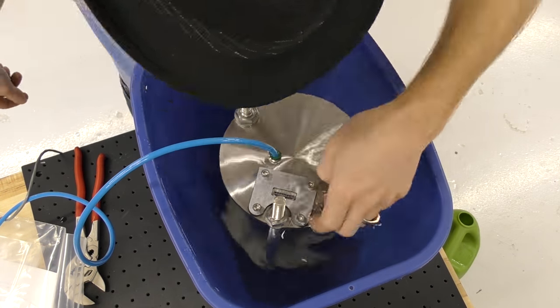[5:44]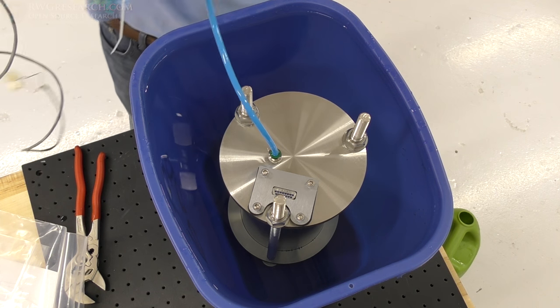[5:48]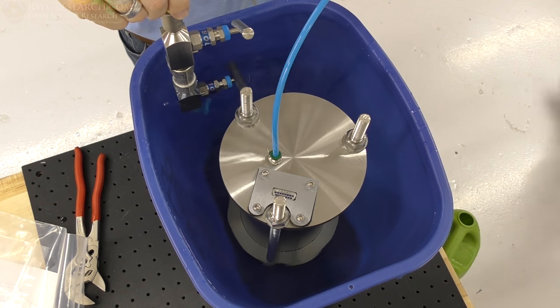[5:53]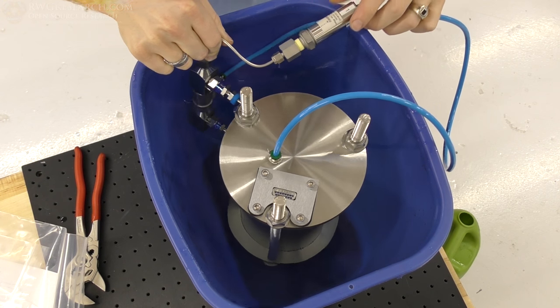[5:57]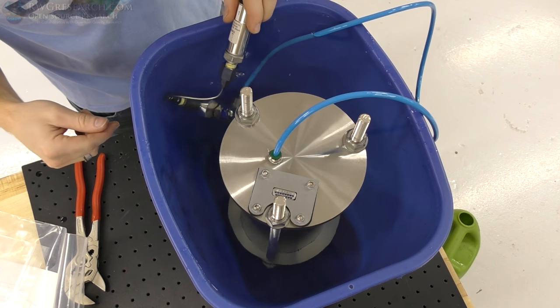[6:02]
Alright, so I filled a trash can up with water, and I dunked the cell in there, filled it up with pressure, just doing a simple pressure test. This was after I did some regular pressure testing, and was having a leak and I couldn't find it. So, yeah, I put the whole apparatus in there, including the valves and everything. And as you can see, there it is bubbling. It was actually a connection unrelated to the cell itself. So it's not a bad problem to have, but it was a problem I needed to fix.
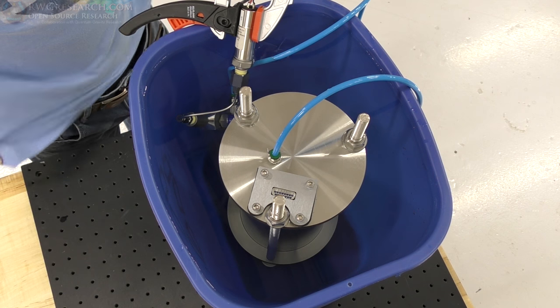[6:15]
All right, well, I'm glad I did this. It appears that I had a leak right here on my hose going to my pressure sensor. The cell seems to be holding just fine. I don't see a single bubble coming out of this thing. So I'm gonna let it sit for a couple hours, then we'll hook it back up to the other system and keep testing it. I should have put it in the lab where I could have actually plugged it in while it's underwater and I could have let it sit, but yeah. It's too heavy to move now. It's got over 5 gallons of water in it at least, probably more. And the cell by itself is already pretty darn heavy. So yeah, it was leaking here, but not the cell.
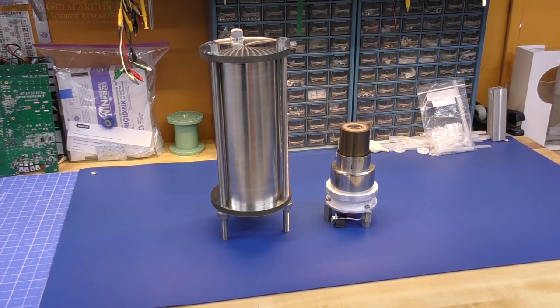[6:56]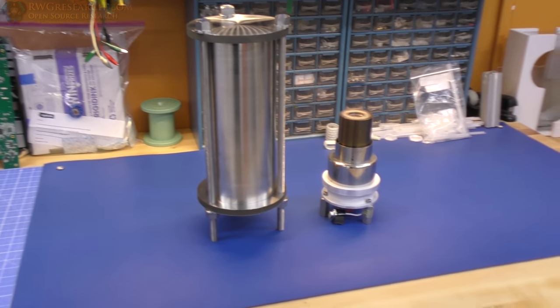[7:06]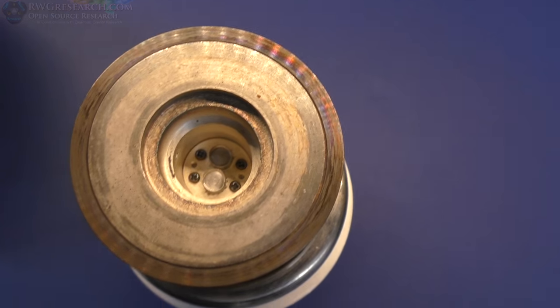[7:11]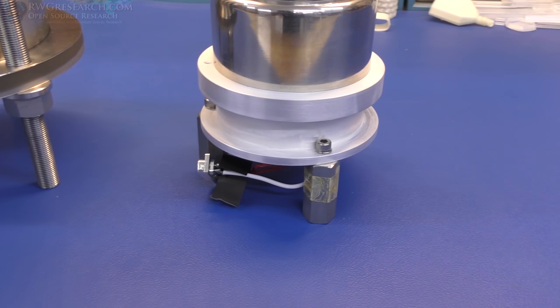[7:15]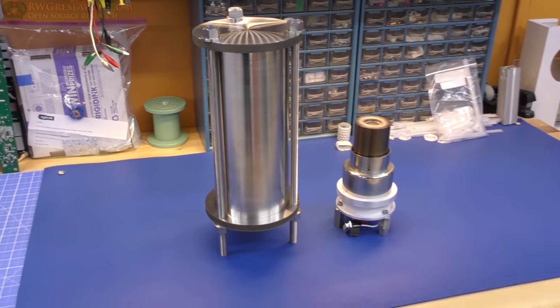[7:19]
Well, here we are again. So after testing pressure and vacuum, everything seems just peachy. So now it's time to install the actual head inside of the pressure cell. So this is just temporarily together, and we will be installing that in here. So let's do it.
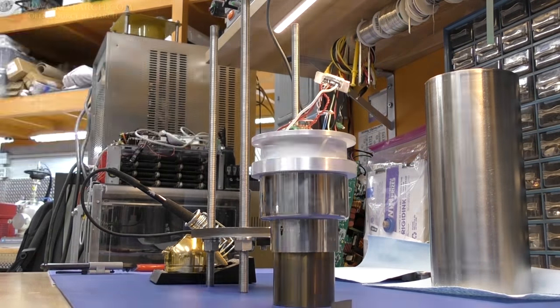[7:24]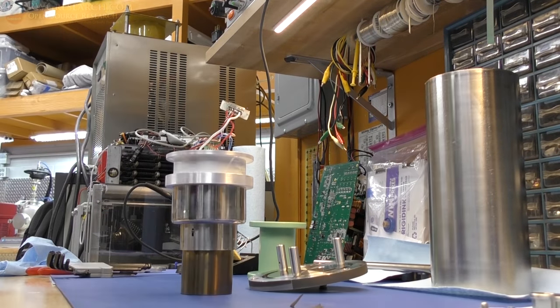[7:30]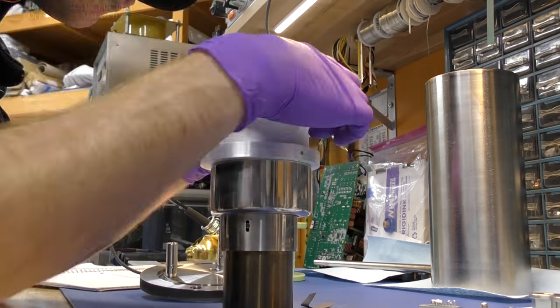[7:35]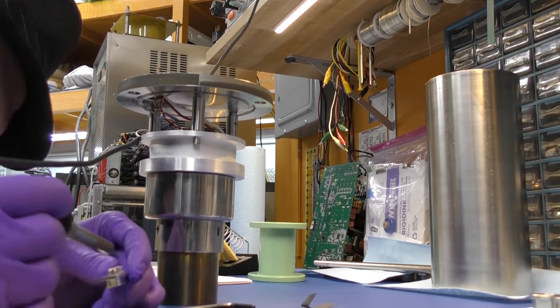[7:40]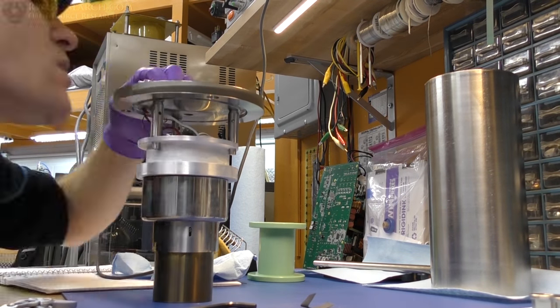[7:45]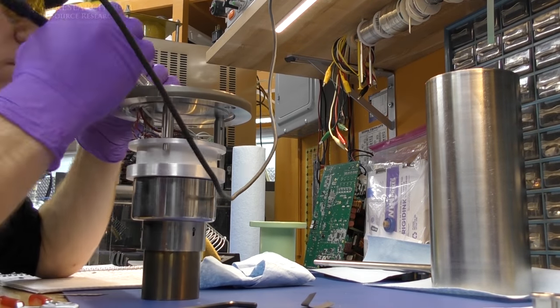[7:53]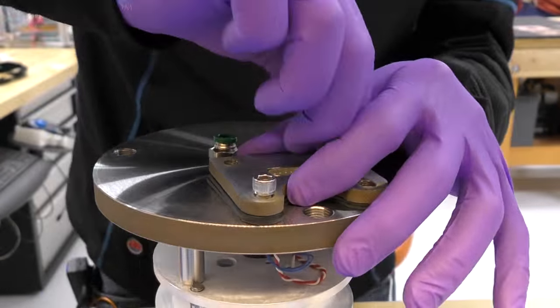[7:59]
So the final installment. I basically just put this whole thing together. So there's some jam nuts on the bottom, and those jam nuts hold everything in place. So that just keeps the rods in place, because I want to be able to take off the top and bottom very easily. So I just wired this sucker up, put the plug in there, wired it up, made sure all the wires were insulated from each other. I actually ended up putting some Kapton tape in there, and just making sure everything was happy with that plug. This is a bit of a challenge, actually. The wires weren't quite long enough, but I did manage to get them all in there.
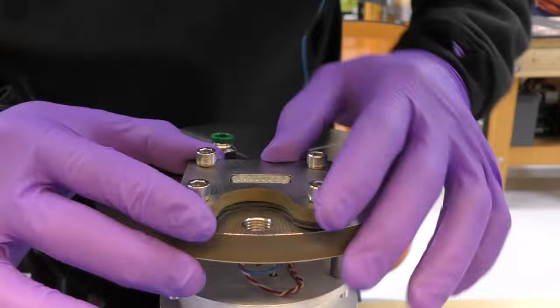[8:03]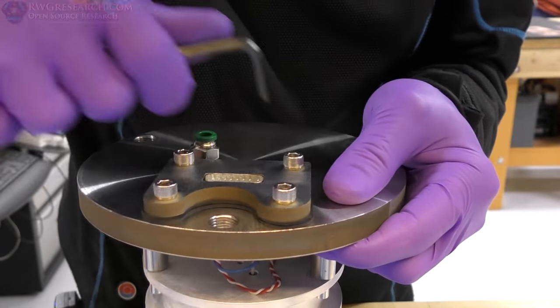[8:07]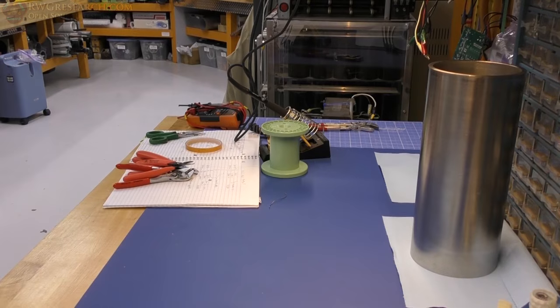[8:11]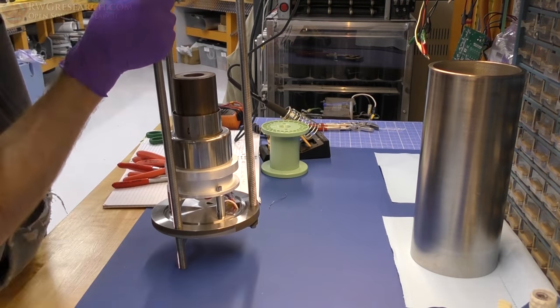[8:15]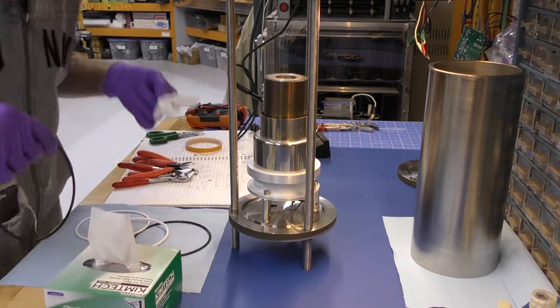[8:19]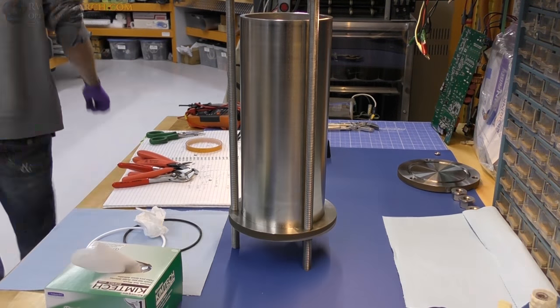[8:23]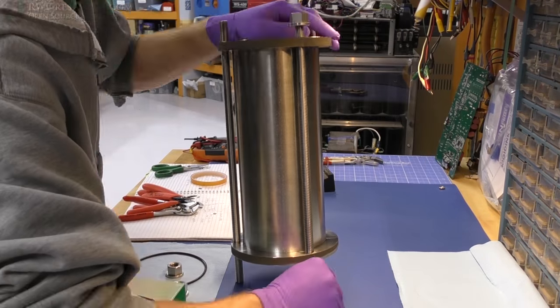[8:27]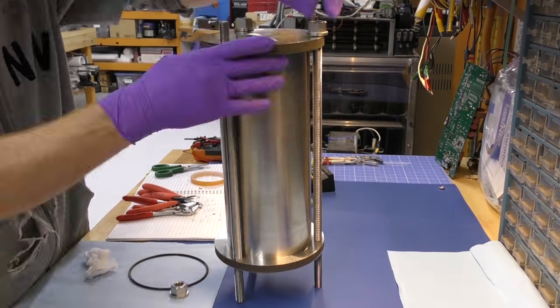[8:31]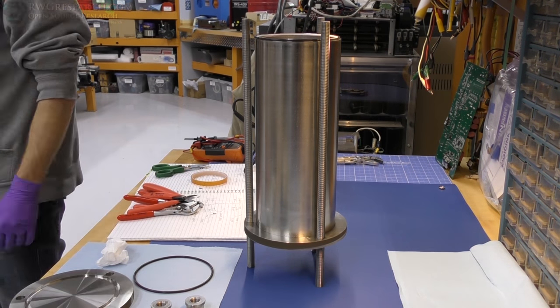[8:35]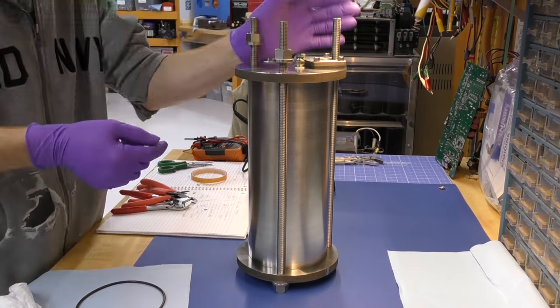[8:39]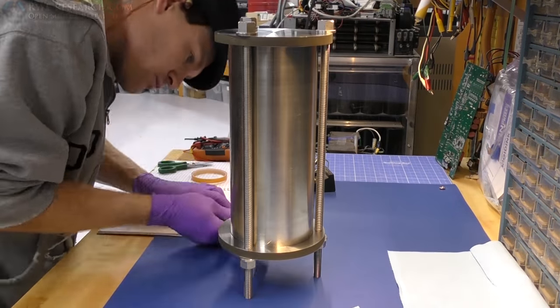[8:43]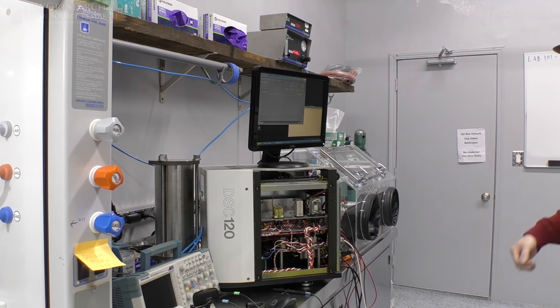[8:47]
So there you can see where I put the two seals, one on the bottom and then one on the top, and that just smashes the plug connector flush as can be and seals it up nicely, and that actually worked really well. So like I said, the rods go through the bottom here, and then there's jam nuts. So remember, I threaded the bottom plate, and the jam nuts are what's holding the threads against the plate, and then the top slides in and off, and I want that to be loose like that so I can just use my hands only. So everything on the top is hand tightened, and that's enough to keep it sealed. So there's the jam nuts on the bottom. Yeah, this unit really turned out nicely.
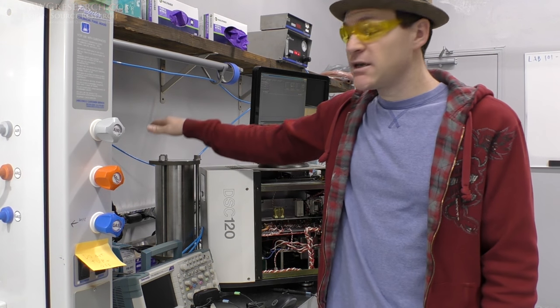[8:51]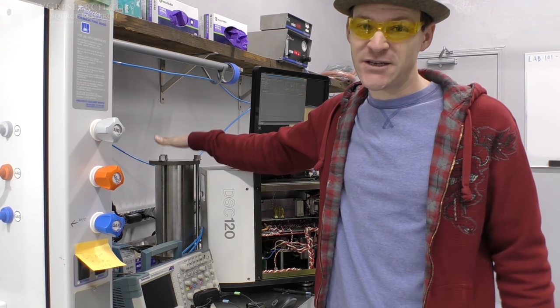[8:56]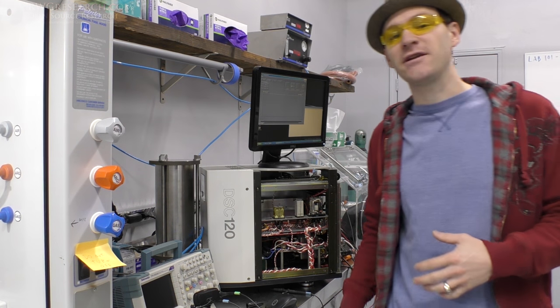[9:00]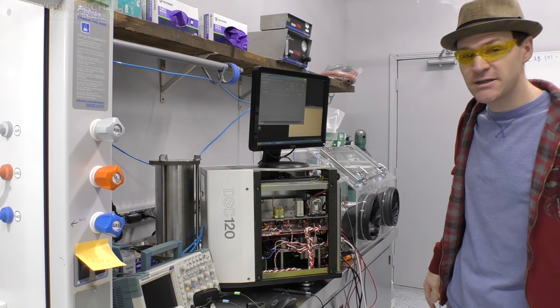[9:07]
Alright, well, it's been several weeks. I hope you guys enjoyed me building this chamber and the time it took to edit the fun footage I got for you. I thought some of those videos turned out really unique and something different that I usually don't do. So anyway, my name's Russ, rwgresearch.com and quantumgravityresearch.org. Let me show you what I'm doing now.
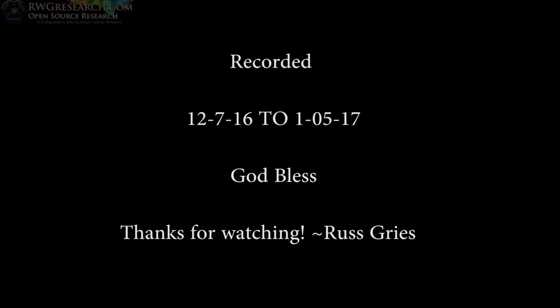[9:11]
Well, now is actually next time. That was actually the introduction to the next video.